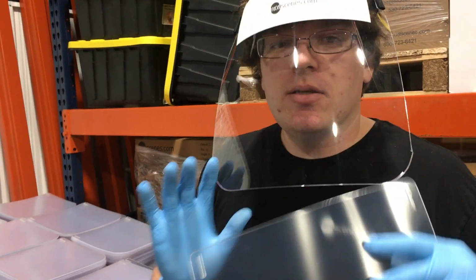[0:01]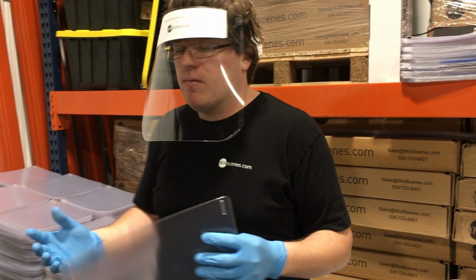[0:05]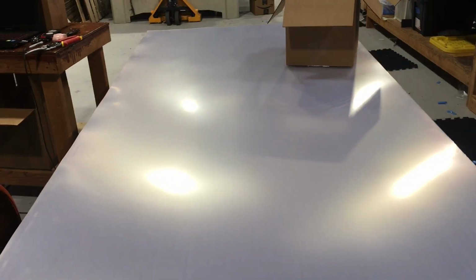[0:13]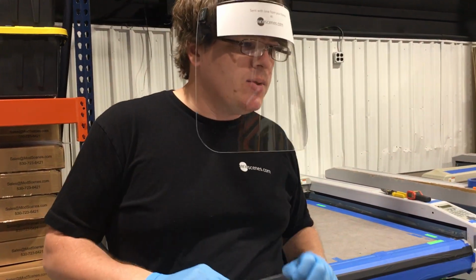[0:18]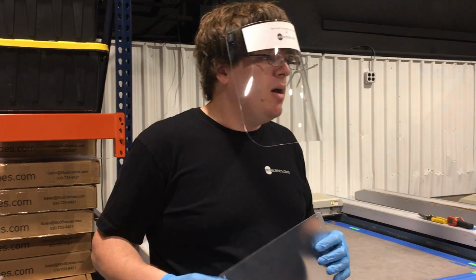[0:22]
Hey again, friends. So I'm going to walk you through step by step how we're making our face shields to help our first responders. So we cut from raw material. This is an 030 PETG. We're also using an 020 as well. It's very hard to find right now. I have a couple suppliers who said they could find it in the middle of May. We have quite a bit on order.
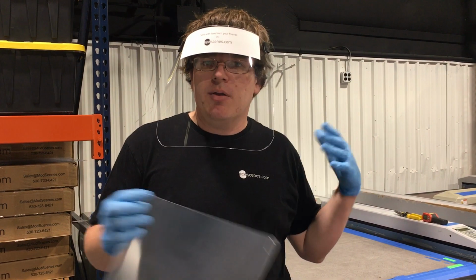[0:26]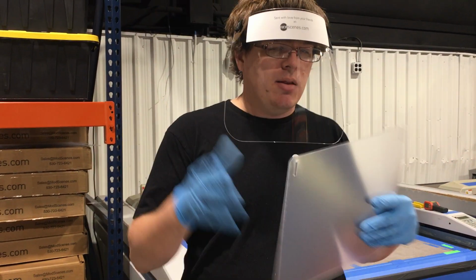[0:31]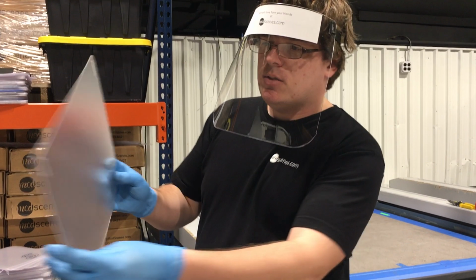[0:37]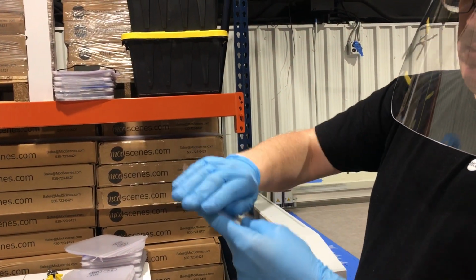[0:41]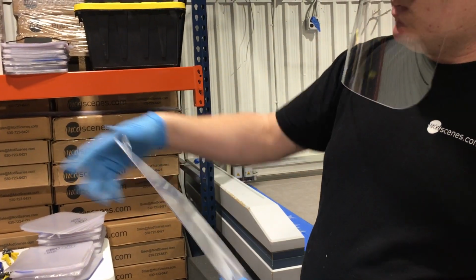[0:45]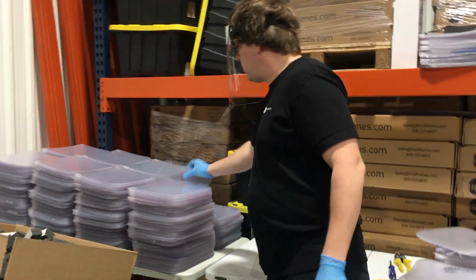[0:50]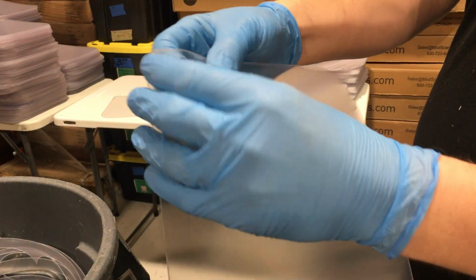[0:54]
I've heard of other people using polycarbonate, so that's another option if you're looking for a good shield material. So we cut these pieces. We cut 16 or 32 per sheet. You can see it's got a film on here, but it's a really nice clear plastic. So we'll cut these once we're done. There's little holes here that will pop out. I'll grab one so you can see how those pop out after they're cut. You just bend the plastic and those will pop out.
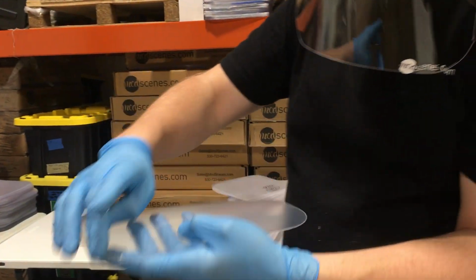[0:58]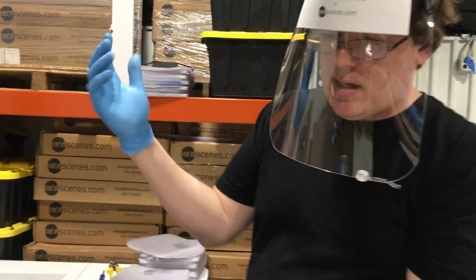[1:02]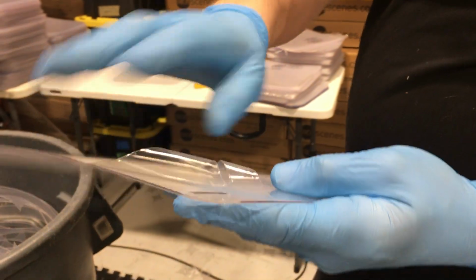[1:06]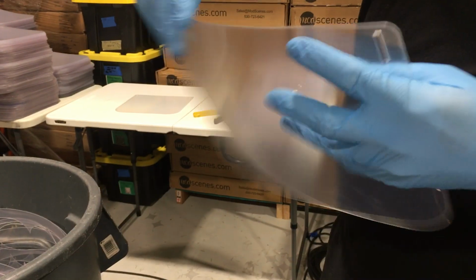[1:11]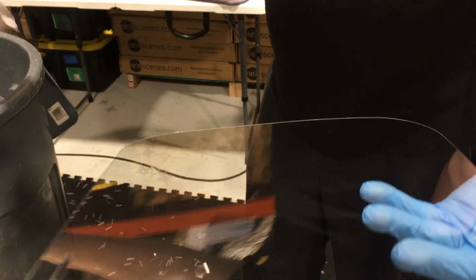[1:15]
And then we'll get our fingers with our gloves. Obviously, always be wearing gloves and a face mask so you're not contaminating the product. We'll get our gloves, and the latex kind of sticks to this topper a little bit. So we'll take this, pull this off. It also sticks to you, so it will be everywhere. So we'll pull this other end off. So now we've got our nice, clean piece of plastic here. So we're going to go over to this table, and I'll show you the foam process.
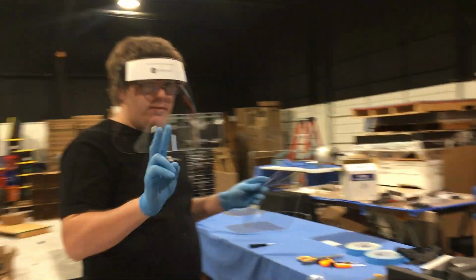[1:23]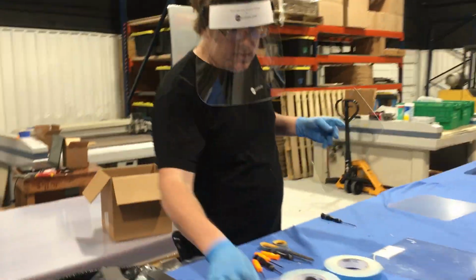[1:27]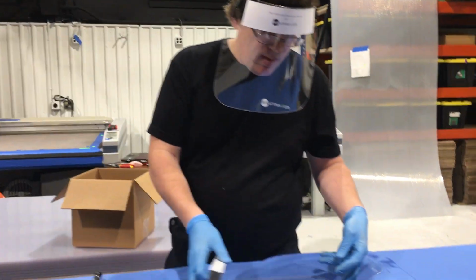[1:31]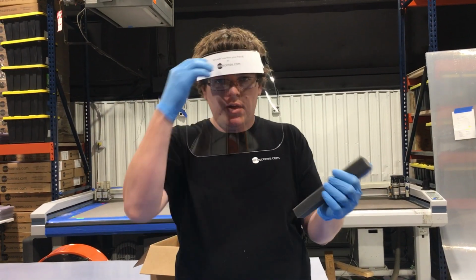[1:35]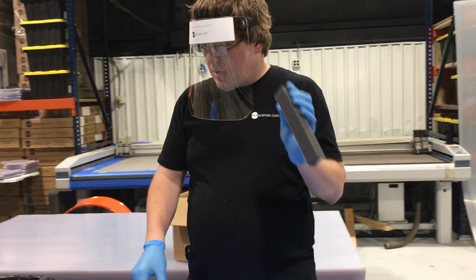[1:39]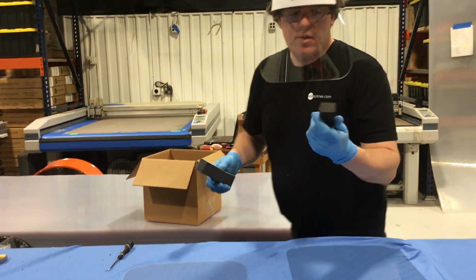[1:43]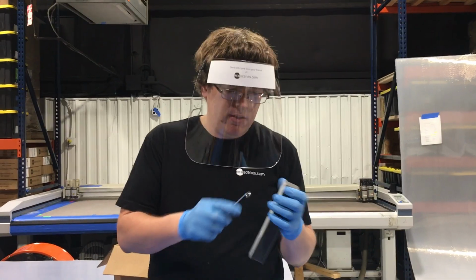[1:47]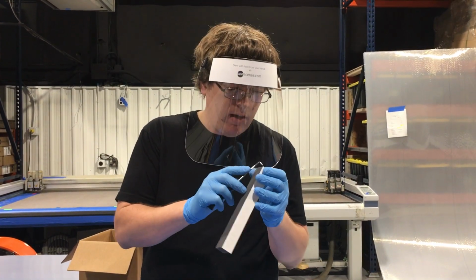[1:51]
So we have two ways of doing it, so I'll go through both ways. The first way is we have some foam here. This is an open cell foam. It is nice and cushy. If you push on it, it's really nice sitting up against the forehead, but it's a lot harder to clean. So we have this, and then we have some closed cell foam, which I'll grab a smaller piece of. So this is our closed cell foam. We bought our open cell foam from a place here in town called Allied Foam, but pretty much any foam supplier can get this.
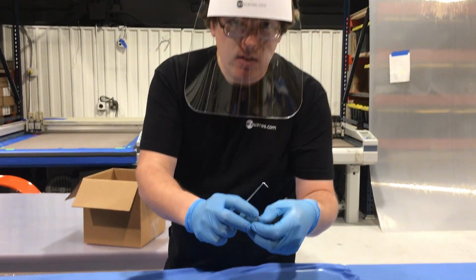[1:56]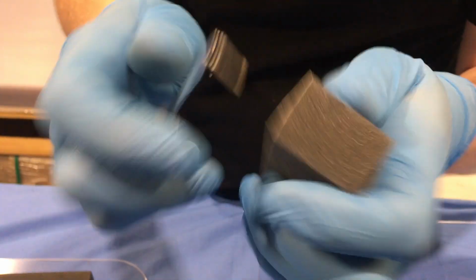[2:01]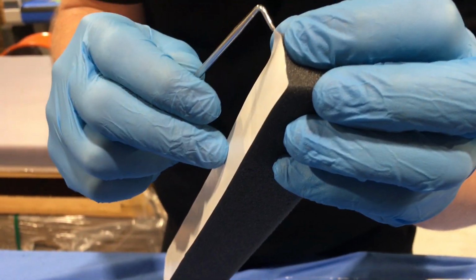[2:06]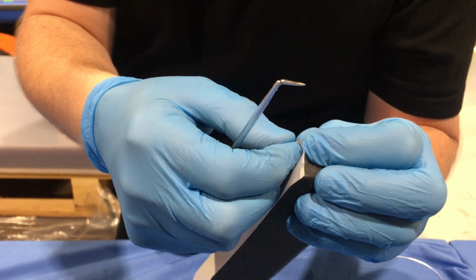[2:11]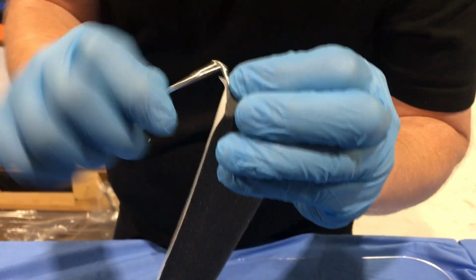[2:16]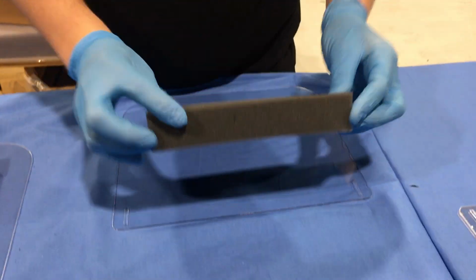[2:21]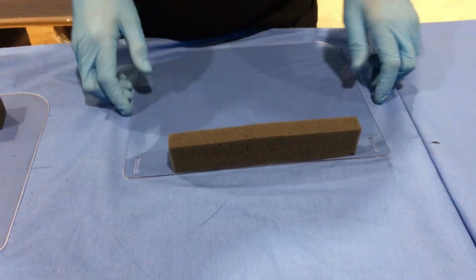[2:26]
And they have an adhesive on the back here. I'm going to have you get a close video of this. This adhesive sticks to this like nobody's business. So pretty much you have to pull the adhesive off of the foam. These dental picks are a great tool for that. You get this dental pick between the plastic and the backer. And once you get it started, this will peel right off just like so. And then you'll center it on your mask, like so. Push that down. Okay, so there's the first part of that.
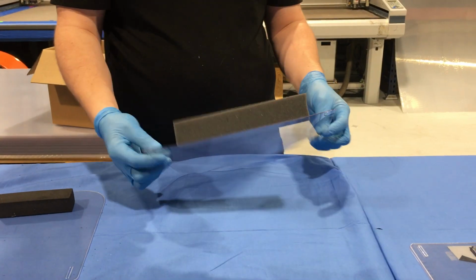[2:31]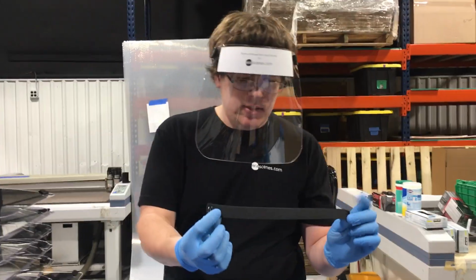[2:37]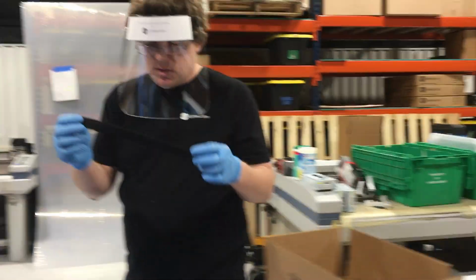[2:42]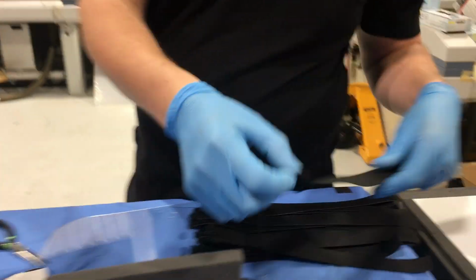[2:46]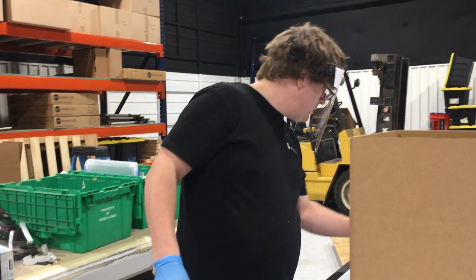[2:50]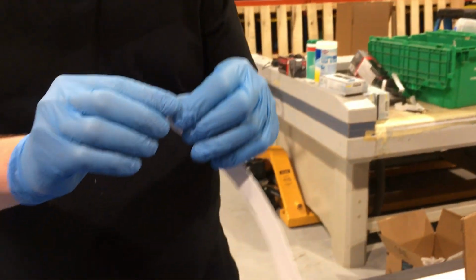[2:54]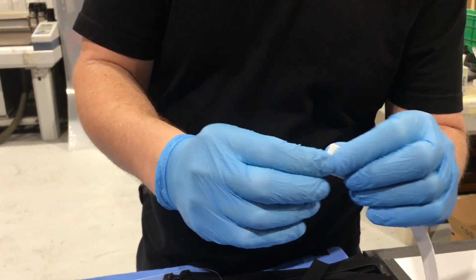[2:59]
Then we're going to add some elastic. So if you'll come down here with me. I've already got some pre-cut elastic pieces. We cut ours to, I believe these were 13 inches. Yeah, 13 inches. Actually, here, we'll go ahead and find a piece here. Looks like we went through all of our full rolls. So we've got a piece here that's already pre-cut. We cut it to a length of 14 inches. So we're going to roll this twice, so it makes a little bit of a square there.
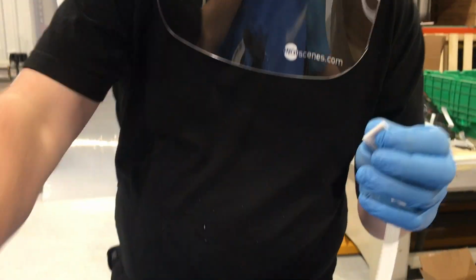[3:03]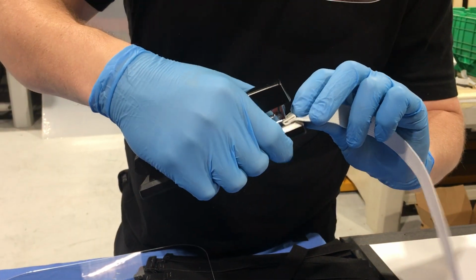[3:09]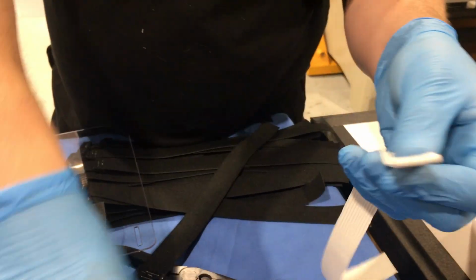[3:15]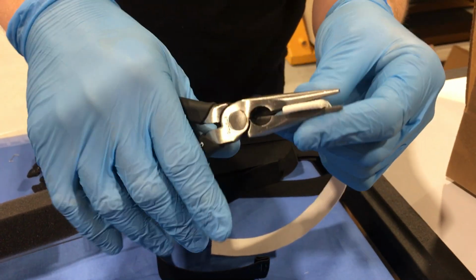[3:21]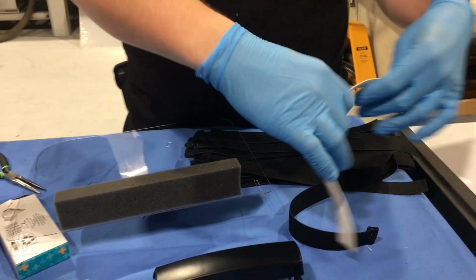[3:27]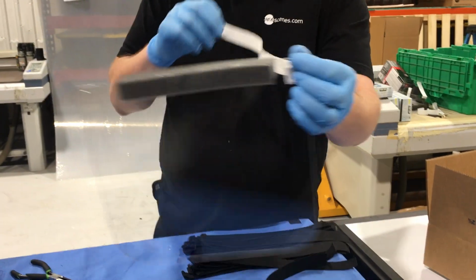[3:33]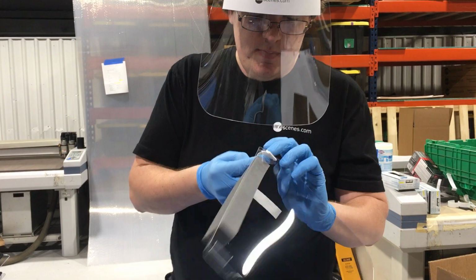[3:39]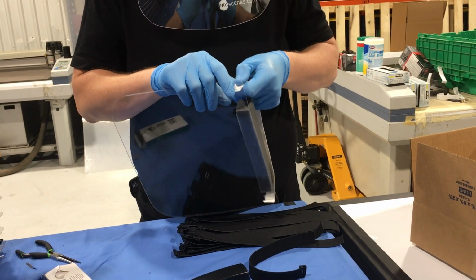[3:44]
I'm going to get a standard stapler. That one doesn't have staples. Standard stapler. Staple once in one direction, once in the other direction. I kind of overlap those, but you can see I've got a top and a bottom of the staple on either side. And that just keeps it nice and snug. Since I overlap those, they kind of bent a little bit, so I'm just going to tighten them with pliers just in case. Now, this elastic strap will slide through the PETG, like so. And then it creates a really nice place to hold here. Then we'll slide this through the other side and do the process again.
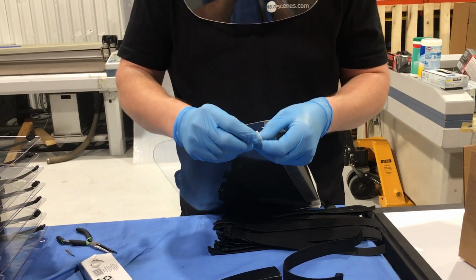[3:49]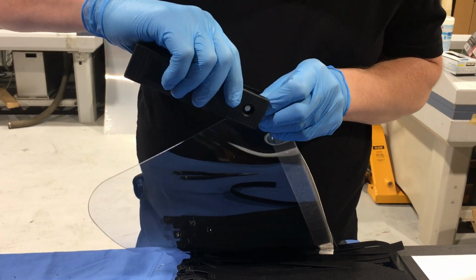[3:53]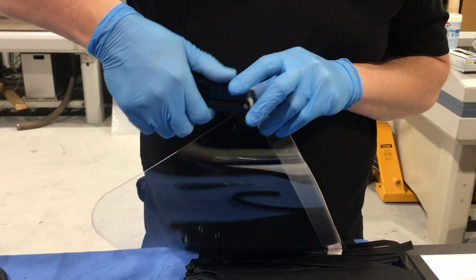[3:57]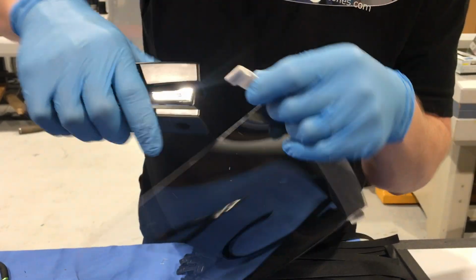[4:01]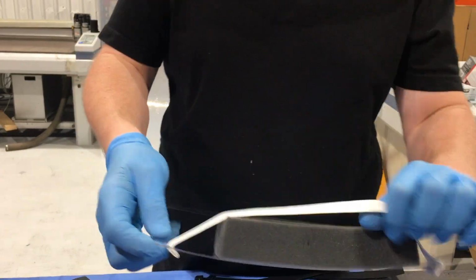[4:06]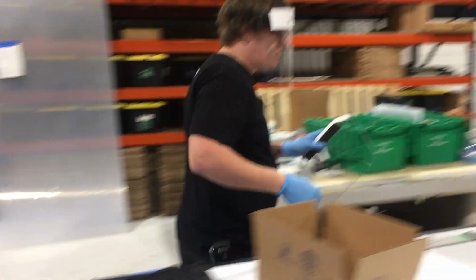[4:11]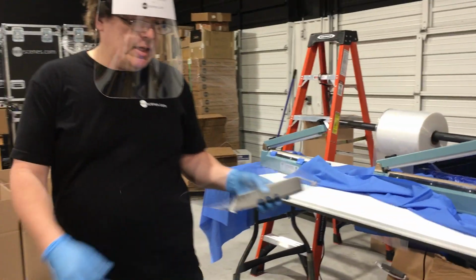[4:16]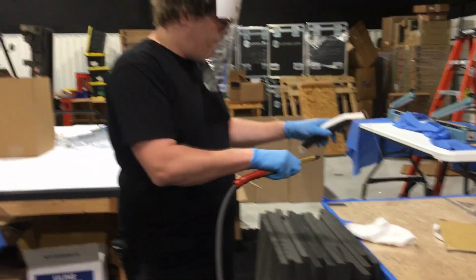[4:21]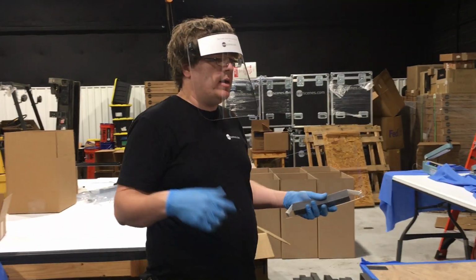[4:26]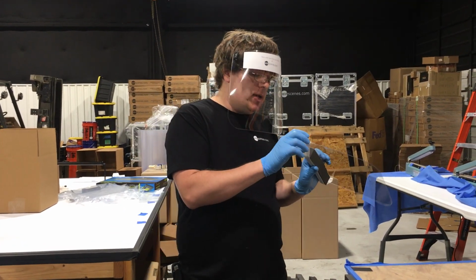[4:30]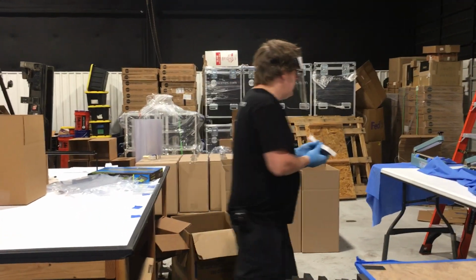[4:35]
So I did the one side, I'm going to do the second side. Okay, so now when that sits, now it's nice and tight, right? Okay, so now we're going to go over and we're going to clean this off. We're just using an air compressor. This is not sterilized. Most of the hospitals are sterilizing on site, but these can also be cleaned off with a Clorox wipe or a disinfectant. You need to use a good disinfectant, and ideally not hand sanitizer because it has a moisturizer in it that'll cloud it up.
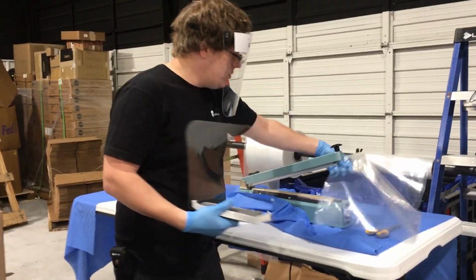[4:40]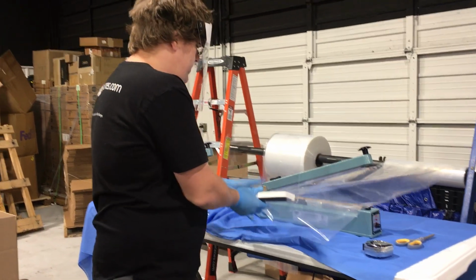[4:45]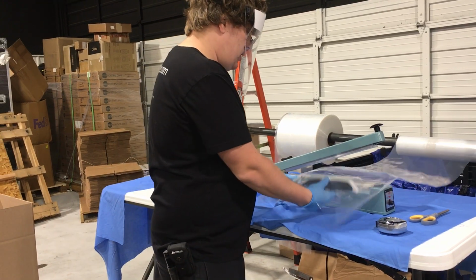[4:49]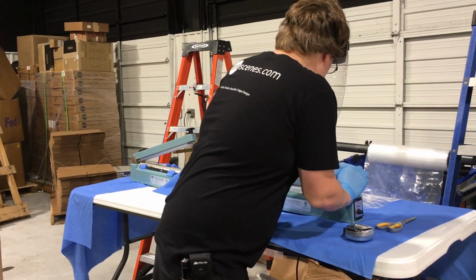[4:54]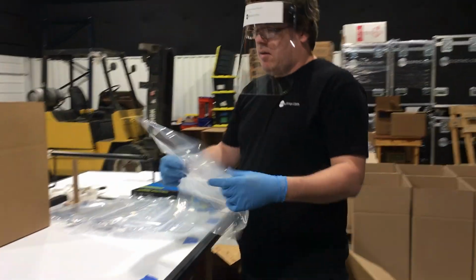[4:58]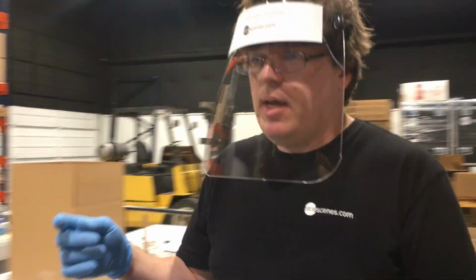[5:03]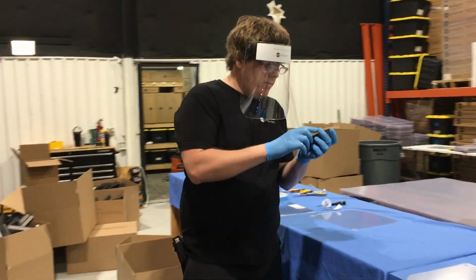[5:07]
So we're going to grab this rolled polyfilm. This acts like a bag for us. And we'll slide this into here and seal it. And once we've sealed it, they'll look just like this. And as I mentioned, we also have open and closed cell foam. So I want to show you one more thing with that. We did the open cell foam, and that had an adhesive already on it.
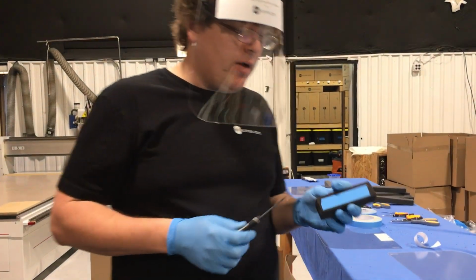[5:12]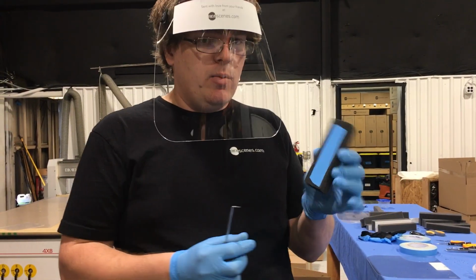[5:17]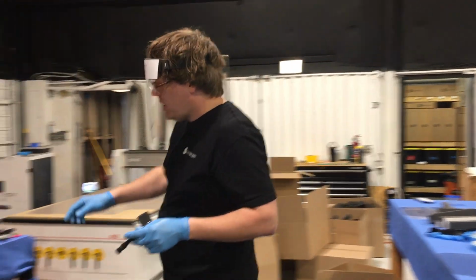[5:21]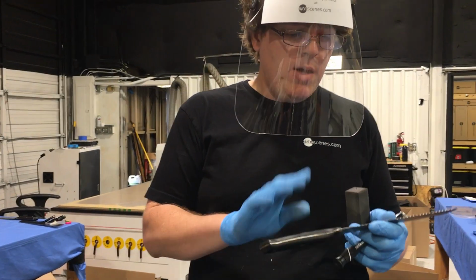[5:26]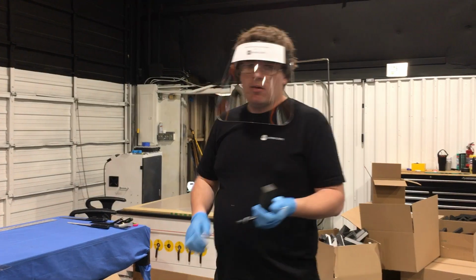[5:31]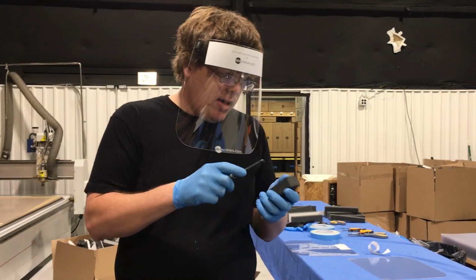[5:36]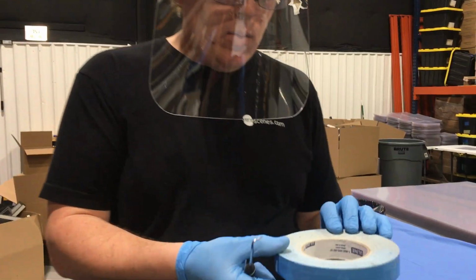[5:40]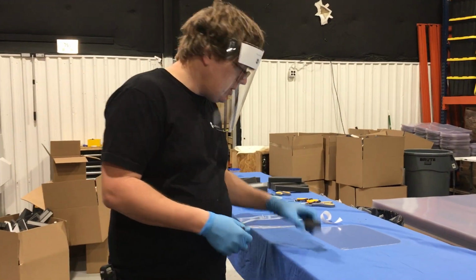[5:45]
But we had a hard time finding closed cell foam with the adhesive in a timeline that was realistic. So we went ahead and we die cut the closed cell foam. That's the easiest way. You can also use a bread knife. If you're looking to cut a small amount of foam, this works. This takes forever compared to a die. The other thing that we've done with some success is we've used a guillotine cutter for paper. But with this, we bought 1-inch carpet tape from Uline. It's a really good adhesive, sticks really well to PETG.
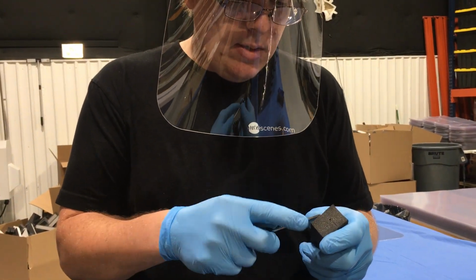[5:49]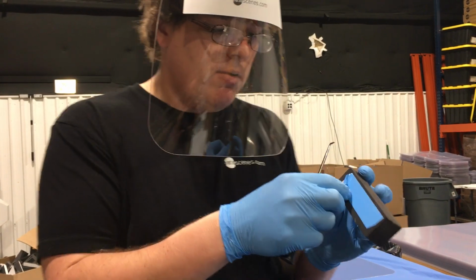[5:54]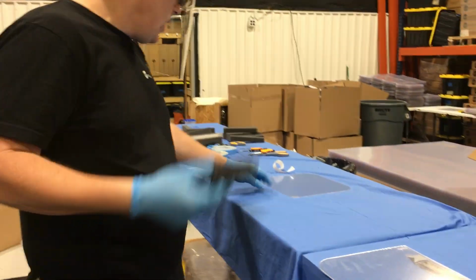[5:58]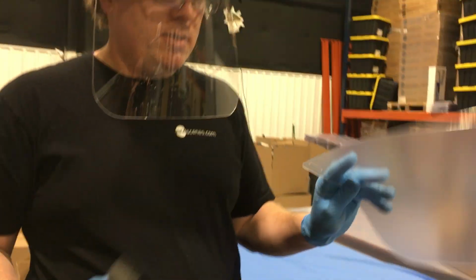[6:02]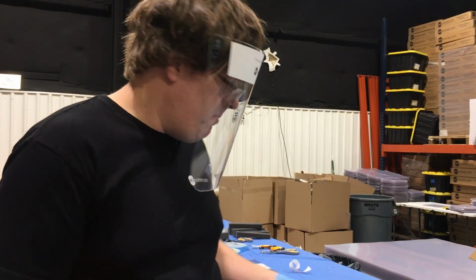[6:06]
We cut little strips and put on the back of these. Again, this dental pick is going to be your lifesaver. You can find these at any hardware store, Home Depot, Lowe's, stuff like that. So we'll pull that off. I'm not going to stick this one on because it doesn't have a piece yet. It's still filmed, but you just put it directly on and it's going to hold right onto there.
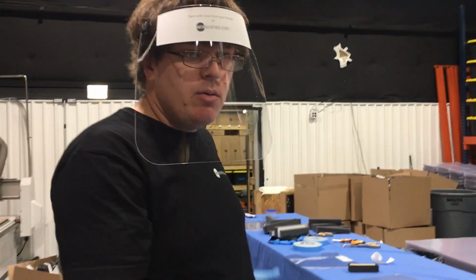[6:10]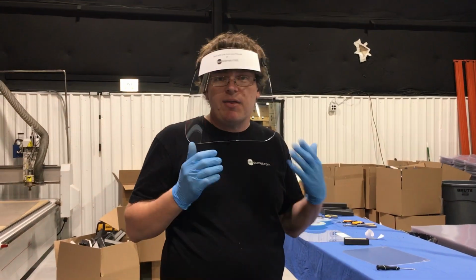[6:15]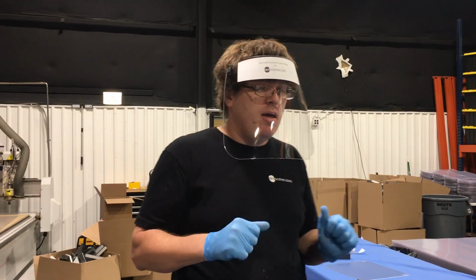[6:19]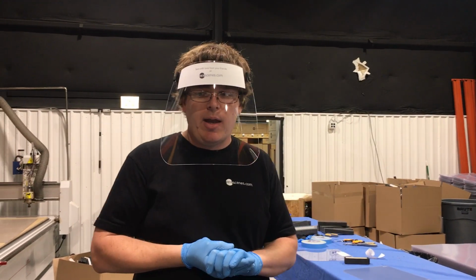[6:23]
So I hope this is giving you a quick overview of the process that we're doing to make the shields. So far we've been doing about 1,000 a day. Today our goal is to hit 2,200 a day. And I think we're going to get there. We've got it kind of down to a system. It's going pretty quick.